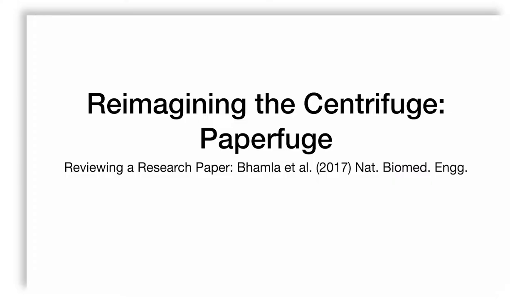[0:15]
So we've spoken about centrifugation so far, in terms of centrifuges that we can find in a research lab. But what if we know the principles of centrifugation and we want to think, how can we make one from scratch? And can we make one that is cheap and yet does our job?
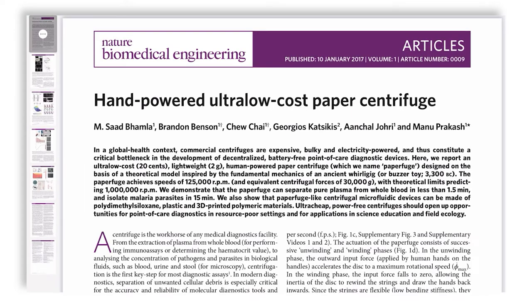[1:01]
Now, sometimes this is a contradiction, right? If you make it very cheap, then it doesn't have the features that the complex one has. And this is the theme that Saad Bhamla and company attempted to address in their paper in Nature Biomedical Engineering. This paper is titled Hand-Powered Ultra-Low Cost Paper Centrifuge, and we are going to review it. We're going to discuss it in the context of the limitations and advantages of such an approach.
They claim that their paperfuge, or hand-powered paper centrifuge, because the key part, the rotating rotor, is made of paper, can achieve 1.25 lakh RPM, approximately 30,000 G, and an upper limit of 1 million or 10 lakh RPM is maximally achievable according to them. They in fact managed to separate plasma in 1.5 minutes. Let's see the evidence.
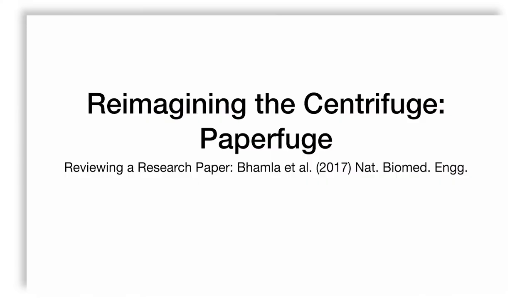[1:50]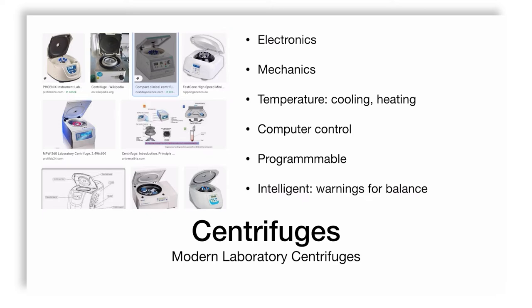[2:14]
So conventional laboratory centrifuges have complex electronics. They usually have an electric motor that drives the mechanics: rotors, spindle, ball bearings, lots of engineering goes into it. They're also at times capable of having thermal components with either cooling or heating or both, because sometimes your sample is thermolabile or thermostable only at a certain specific temperature. And being able to control this is important, which is why a good research lab has a good centrifuge, at least one. Modern centrifuges are also computer controlled with programmable interfaces.
They may even be intelligent. They will give you a warning. They will alert you when things go wrong, like, for example, tubes are not balanced and so on and so forth. But all these things are not always available. And many of you may be in colleges that are watching this, and maybe you know that these kinds of centrifuges are not available in your college. And it's a bit of a pity, but that's how it is.
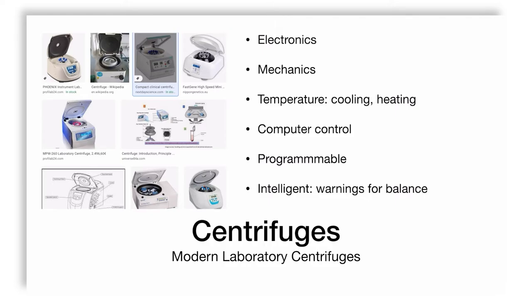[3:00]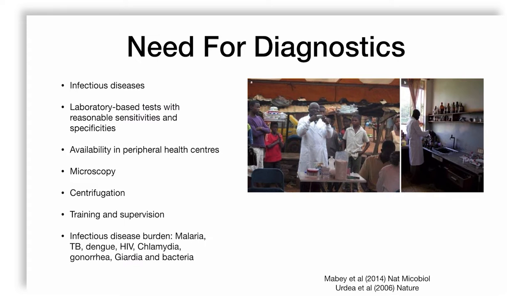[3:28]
But when we go to medical diagnostics, it turns out that for infectious diseases, to run laboratory-based tests of reasonable sensitivity and specificity, we need microscopy and centrifugation. Now, not all these devices are available in peripheral health centers, in remote areas. Even in India, you can see that there is a big difference between urban and rural, and even within urban areas, there will be parts of the city which do not have very good facilities for health and parts that do. So to tackle this difference, we need both equipment and training, as well as supervision. Because the disease burden of malaria, TB, dengue, HIV, chlamydia, gonorrhea, giardia, and bacterial infections is so high in countries like ours, that something needs to be done.
And this is reviewed by Mabey et al. in Nature Microbiology and Urdea et al. in Nature. The paradox is that these devices are commercial. You can buy them. But that means the primary healthcare center needs money to buy them, which means they need a budget, which means they need somebody to pay for it. Now, not everyone has the money. Not every country has the budget for it. Not every country has the plan to put diagnostic centers everywhere. This is a tragedy for humanity.
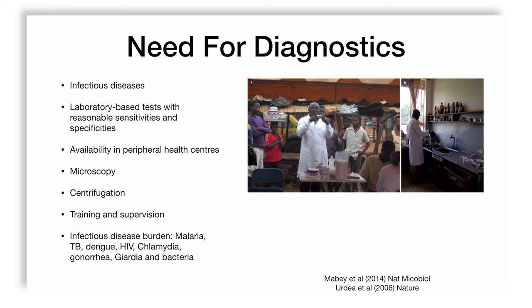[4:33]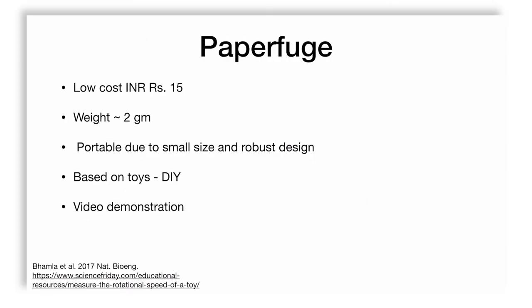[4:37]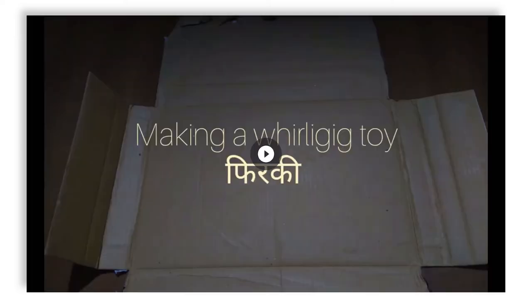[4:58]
And scientists like Bhamla et al. decided to make a low-cost centrifuge costing only rupees 15 in terms of parts, weighing only 2 grams, and made in such a way that it is portable and robust. They in fact used it as a platform based on a toy, a do-it-yourself toy. So the video demonstration I'm going to show you is about exactly this toy.
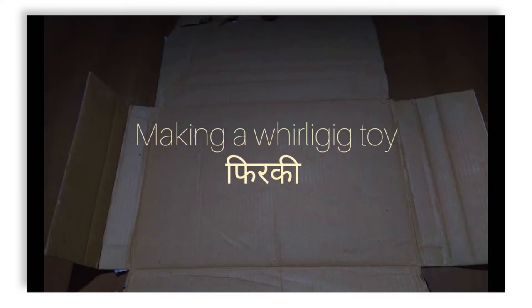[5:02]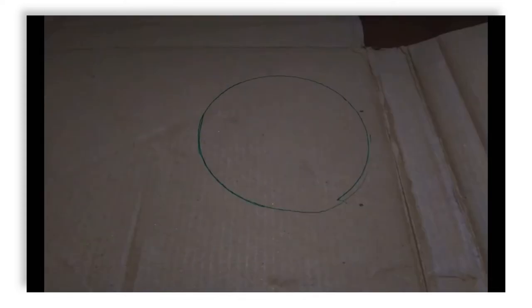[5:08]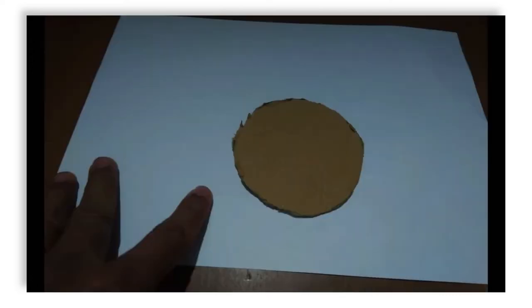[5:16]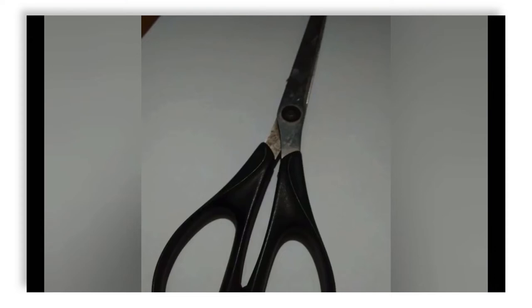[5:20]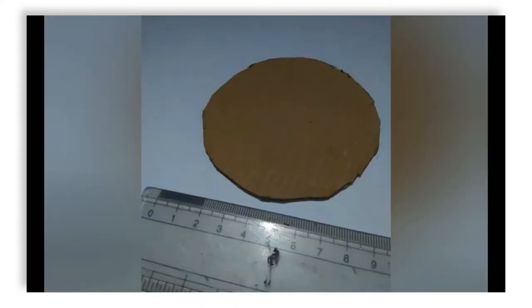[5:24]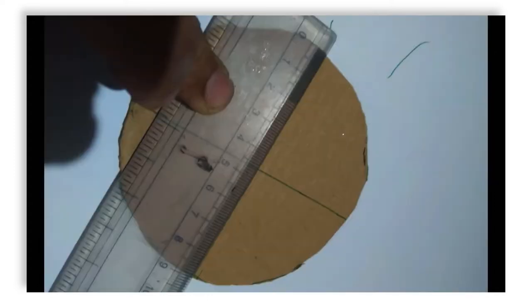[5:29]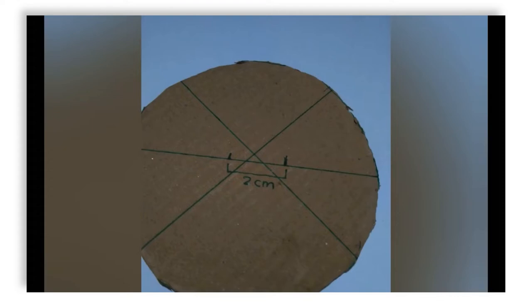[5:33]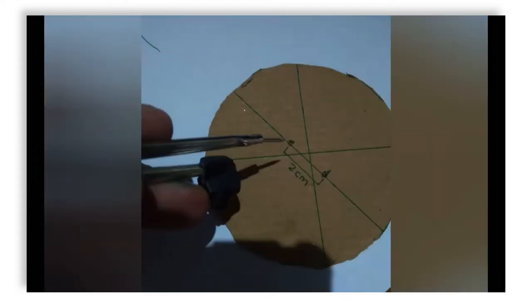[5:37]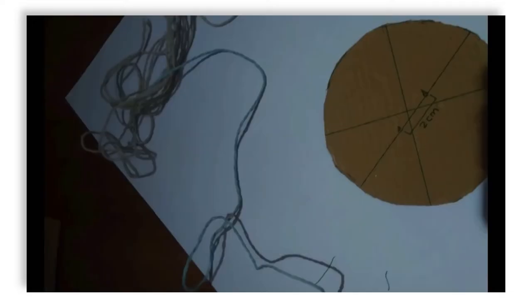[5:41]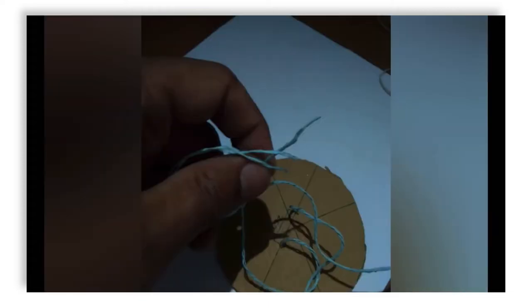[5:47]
I took a cardboard piece, so I tried to mimic what they did. Took scissors, thread, pen, and something circular. I marked a circular pattern on the cardboard piece, cut it, smoothed the edges of the cut with a scissor. And then with a scale or a ruler, I made lines along the diameter so as to find the approximate center. Once I had the center, initially I got some wrong centers. I marked two holes separated by 2 centimeters using a compass and inserted thread through it. That was my basic toy. And I tied it up. Now I have my basic toy.
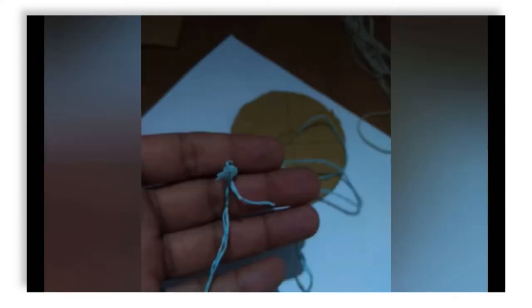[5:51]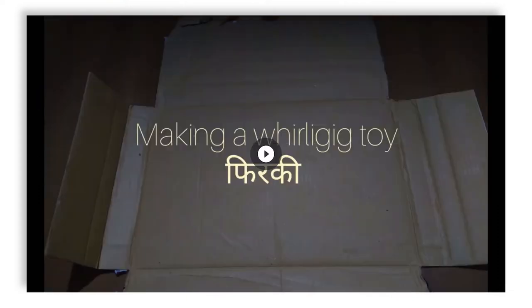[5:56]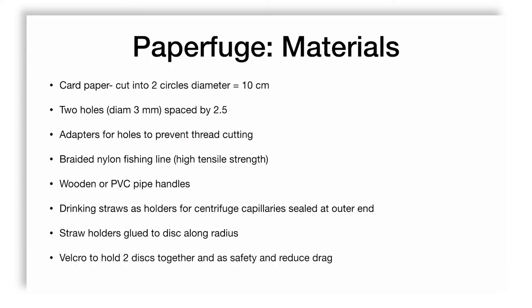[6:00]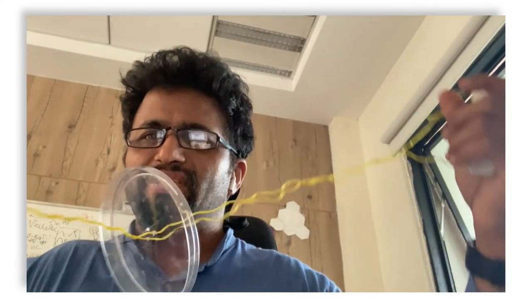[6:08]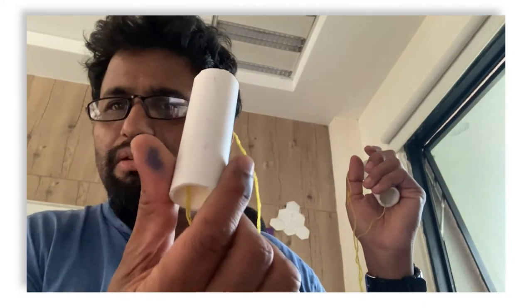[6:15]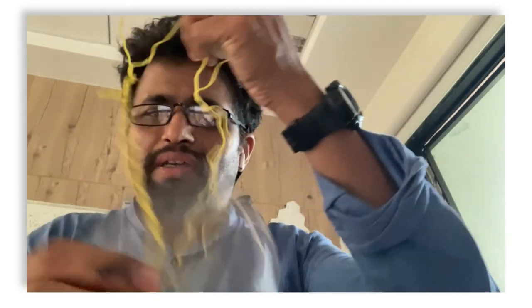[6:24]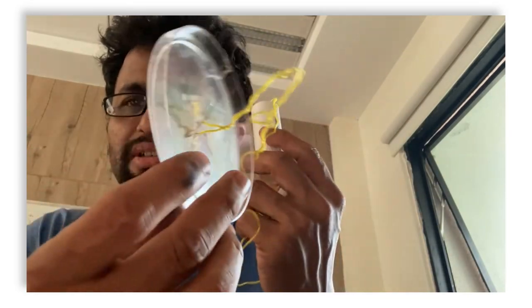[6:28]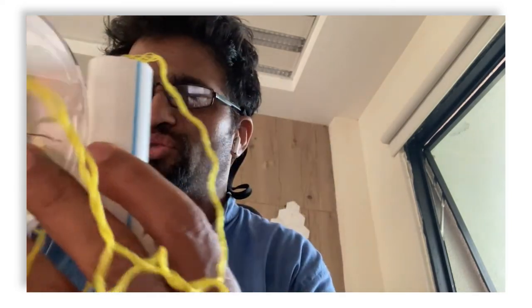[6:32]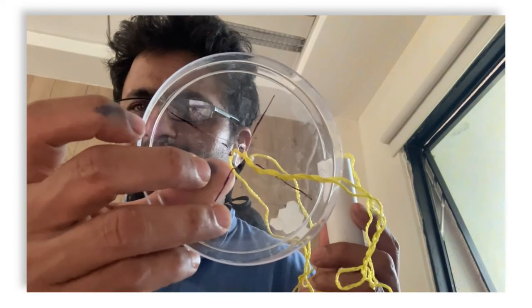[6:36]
But this basic toy can be made a bit more sophisticated, as the people in the paper have described. And I've made a version of it, which you can see now. So this is a small mimic of the paperfuge that we have made, with the handles made out of PVC pipe, nylon thread, fishing thread. And you see it in focus now. And a disc that is made out of a cap of a petri dish, 80mm petri dish. And we have marked the two centers as we had described in the description earlier.
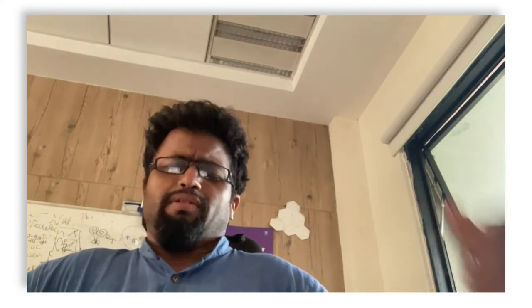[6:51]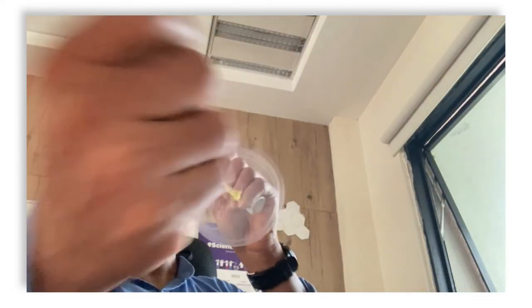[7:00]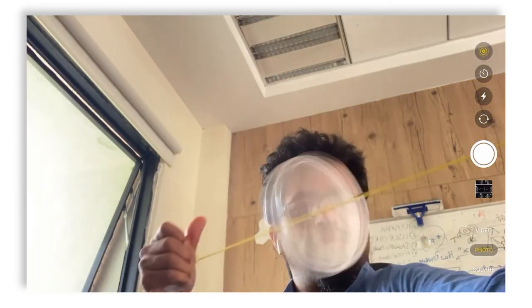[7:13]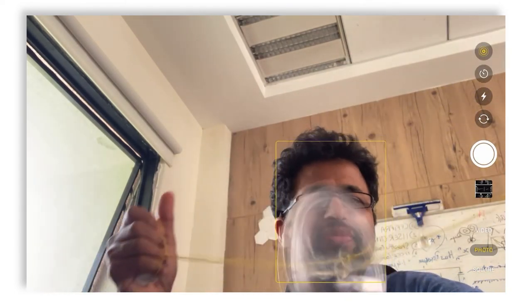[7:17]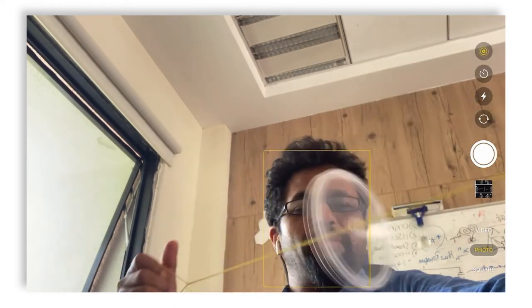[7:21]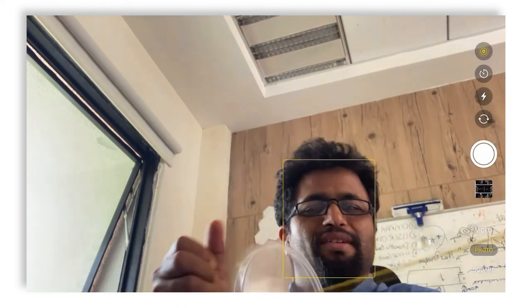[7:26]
And you will notice that this is surprisingly capable of working quite well. So you need a little bit of practice. You need to torque it. And you will find that this expansion and contraction motion gives you quite high RPMs. And I don't know if you can hear it, but this is really fast. According to the calculations in the paper, they can at times even reach 10,000 RPM. And that's astounding. Now, all this motion, what is it for? Let's see.
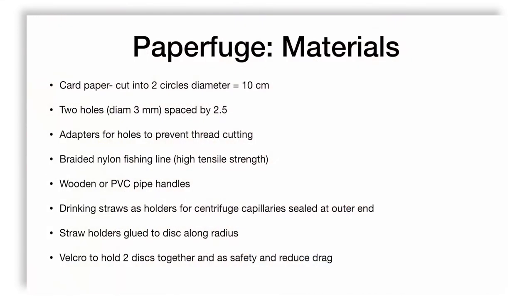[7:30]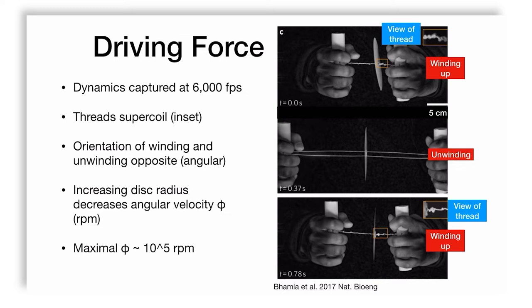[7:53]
So as it turns out, when they used a high-speed camera, what I have here is a normal 40 frames per second camera. They used 6,000 frames per second camera. And they could see what you saw already, maybe by eye, that the thread can supercoil. And the orientation of winding and unwinding is opposite, meaning to say that when it's winding up, the rotation goes one direction, clockwise, you say, and when you unwind it, it goes in the opposite direction. The force that is exerted is usually to unwind, because as you noticed, that my device compresses when I am trying to let the supercoiling take over.
This is the part which they refer in the paper to as winding up. And the pulling apart is called unwinding, which leads to rotation in the other direction. That momentum, or you may say inertia, results in it over torquing and going in the other direction, leading to again supercoiling, and the cycle goes on.
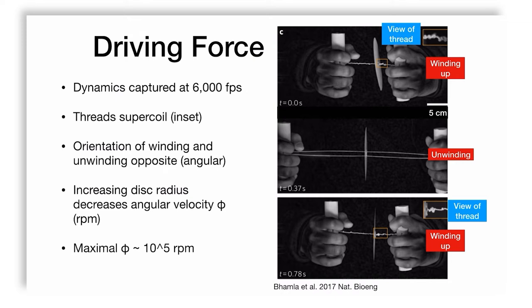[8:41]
They also found that the disc radius, if it's very small, the angular velocity is very high, and as the disc radius increases, you get lower angular velocity. Now, think about this for a second, that if you are trying to centrifuge a tube, let's say a Eppendorf tube, or these microcentrifuge tubes, then you want at least a minimum disc radius. Because if you don't have it, then you are unlikely to be able to make any use of it. Correct? But on the other hand, you also want it to go fast for the applications you're looking for. So the maximal RPM that they could observe was 1 lakh RPM. That's a lot. That's a lot, by the way. And if you have access to a laboratory, or when you go back to your laboratories in school or college, you can take a look at this.
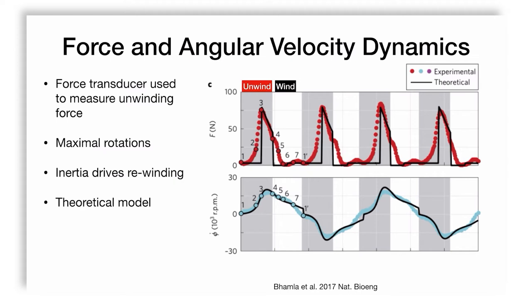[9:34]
In their paper, they demonstrated using a force transduction device that the pulling force, the unwinding force, is in the range of about 75 newtons. The part where there is a drop in the force is also a part corresponding to the winding phase. That winding phase leads to slightly slower rotations and a switch to the other direction. This is what I was referring to. So what you're looking at in the two graphs, upper and lower, are force and the corresponding RPM for the same time series.
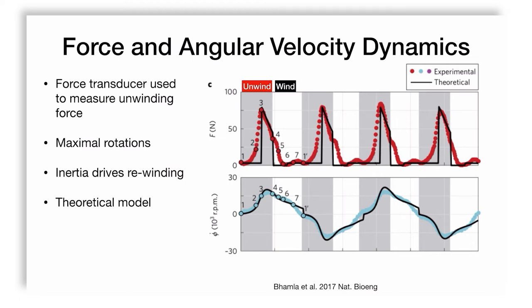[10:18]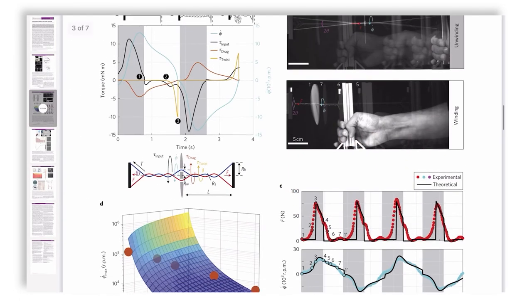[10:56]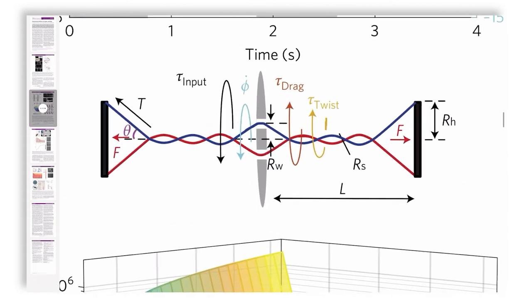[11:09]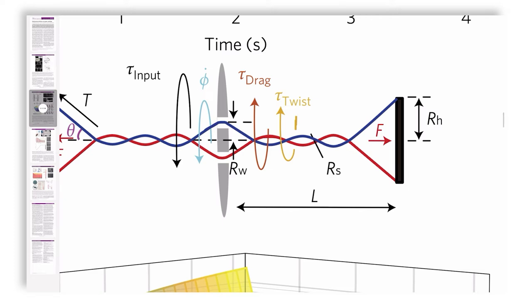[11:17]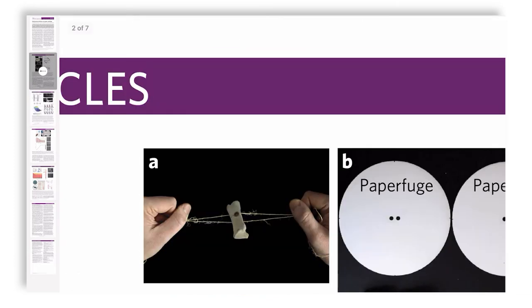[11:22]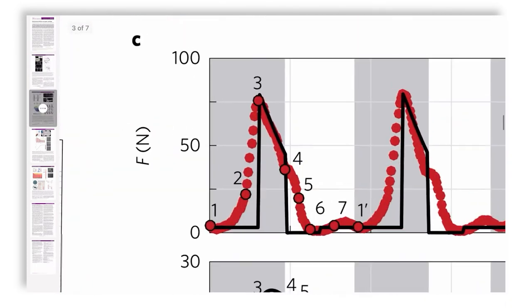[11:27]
The interesting part of this is that they also developed a theoretical model of the physics of torque, of the thread, of the viscous drag that the centrifuge experiences as it moves through this fluid of air. And finally, the motion itself, which is driven by the behavior of the user. So if we look at their paper, they are describing T input, that is the behavior of the user, the twist due to the thread, and T drag, tau drag. These are the three torques that they are interested in. The radius of winding, radius of the hands, and the theta angle formed by the hand, the thread, and the hands are considered to be important. So twist, drag, and input.
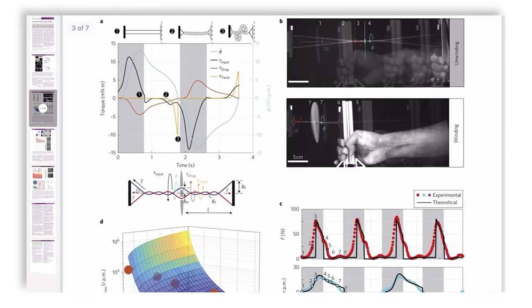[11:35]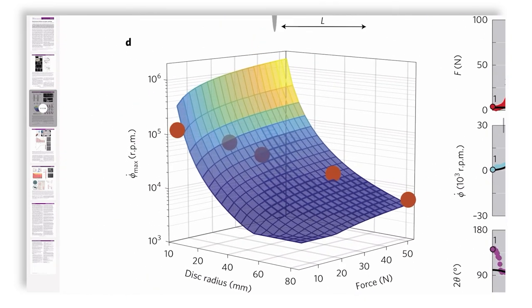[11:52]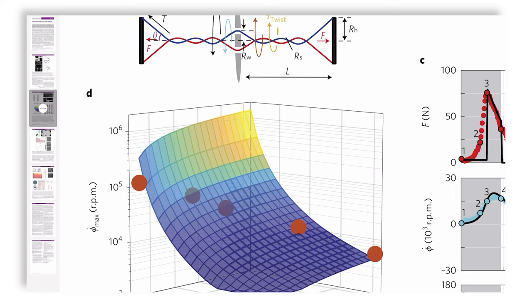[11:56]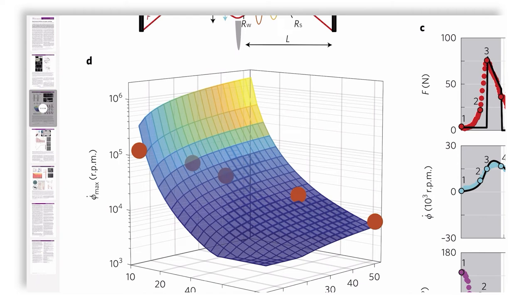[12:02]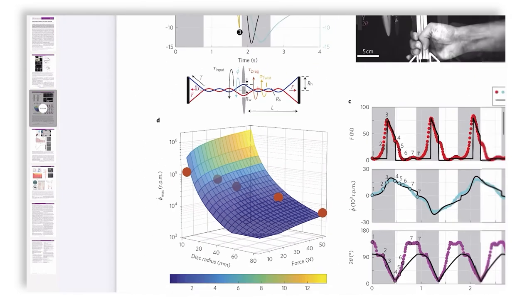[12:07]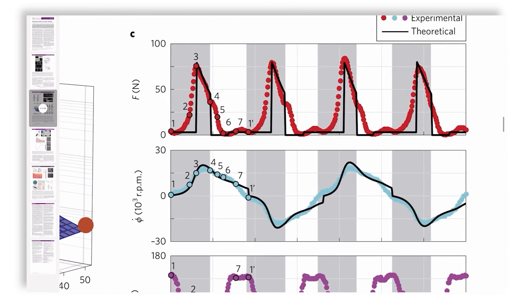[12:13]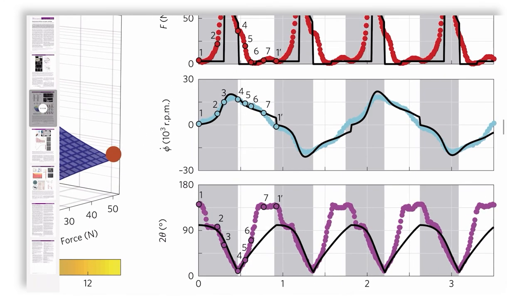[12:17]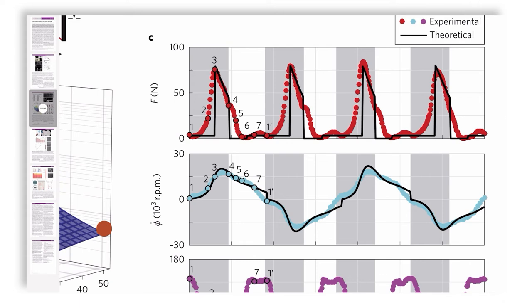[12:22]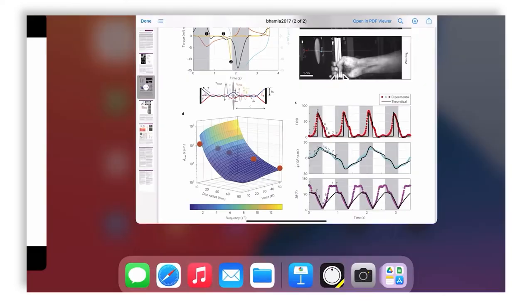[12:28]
Now, what they also do is they test whether the experimental data of rotation, disk radius, and force match with each other. And as you can see in this surface graph, they appear to indeed match. As with a lot of theory, you can calculate a lot theoretically once you have the equations, but experiments are harder to do. But in this sort of empirical approach, it's very important to know if theory and experiment match. That is also the case in the force, angular rotations, and 2 theta degree measures, where they all qualitatively follow the same behavior as the experiment. The circles are the experiments, the black lines are the theory.
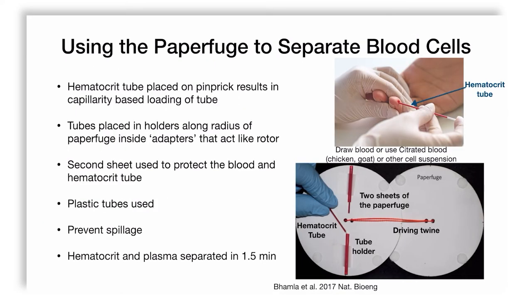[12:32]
So what did they use it for? I said this earlier, that it depends on the application. In their case, they followed the hematocrit. Now, you remember I have spoken quite a bit about hematology and very basic, very simple, elementary medical tests that are conducted when you go to do a blood test. Hematocrit is something that is
a very old-fashioned measure, because you take a hematocrit tube, pinprick the person, get a capillary bleed, place the tube in a specialized hematocrit centrifuge, and spin it and measure the percentage of the red blood cell layer to the total height of the blood column. Naturally, this process must involve heparinized or citrated blood to prevent clotting.
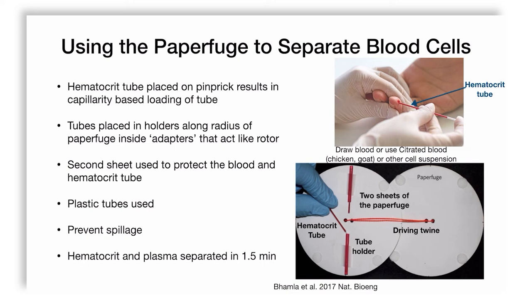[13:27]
So when you take the blood like this, it has to be already containing citrate. The amount of citrate added is constant, so that it doesn't make a difference to your calculations of hematocrit. Anyway, these are relative measures, so relative to the total volume is all you're interested in. But you can imagine that if you put too much citrate, you will change numbers.
The tubes are placed in the holders along the radius of the paperfuge, and the adapters are straws, like sucking straws. A second sheet, remember we said that the published report talks about 2 paper sheets, is used to protect the blood and the hematocrit tube. They use plastic tubes to prevent breakage and damage and injury to the user, and they use the straws to prevent spillage. All of them are sealed at one end using acrylic adhesive.
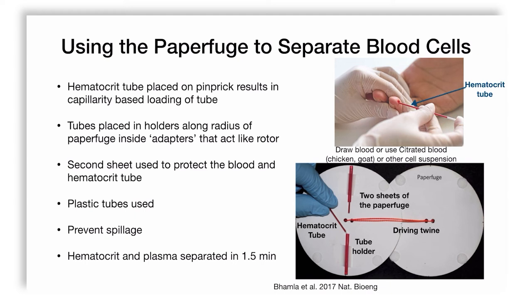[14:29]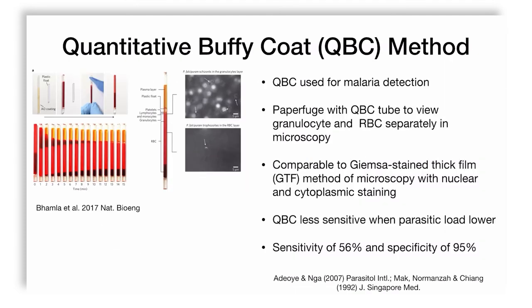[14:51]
What they found is that hematocrit and plasma separated in 1.5 minutes. That is amazing, because typically in experimental work, this takes about 2 minutes. So it is very comparable. Now, of course, they optimize the conditions, and this is important in any kind of experimental approach to find the best situation that works. And they also went ahead to use a demonstration to check whether the buffy coat can be obtained from this paper centrifuge for diagnosing malaria.
And they did this using a QBC quantitative buffy coat tube, which is already pre-coated on the inside with acridine orange. Acridine orange is a DNA staining dye, AO as it is referred to here. The citrated blood is introduced into the tube. A little plastic floater is added into it that spreads the buffy layer, therefore giving you bigger resolution, because otherwise the buffy layer is very small. Buffy layer usually includes white blood cells. Buffy coat.
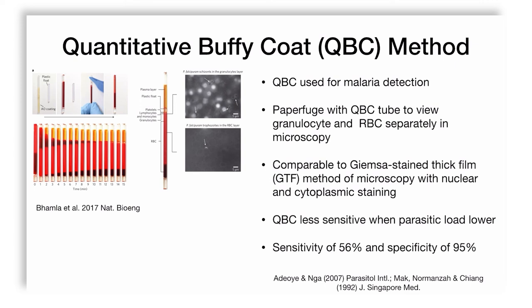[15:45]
And the cells are centrifuged using the paperfuge. Initially, as you see over here in the left corner, the float drops down because of centrifugation, but then because of density, it reaches an equilibrium position and spreads the buffy coat. The bright red color is RBC, as you expect. The platelets, lymphocytes, monocytes and granulocytes are spread in the upper thin layer, and the plasma layer is on top of it. The float is the one that separates the plasma and the buffy coat.
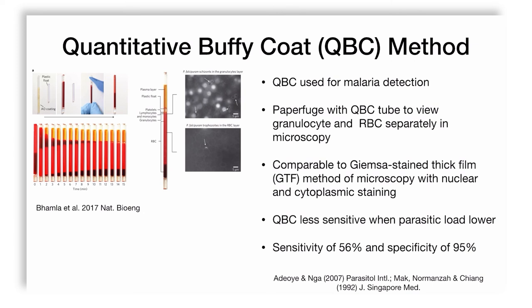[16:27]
In comparative studies between the quantitative buffy coat method and the Giemsa-stained thick film, that is the GTF method, it was found that QBC is much less sensitive, meaning to say the lowest number of parasites that can be detected using QBC is only 56% compared to the gold standard, which is Giemsa thick stain. The specificity, on the other hand, meaning if there is something, you will find it and you can distinguish it from other parasites, let's say malaria from dengue, is 95%. This is based on studies by Adeoye and Nga in Parasitology International and Mak, Normanzah and Chiang in 1992 from Journal of Singapore Medicine.
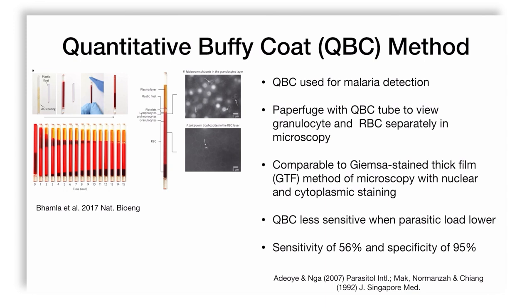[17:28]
So in summary, we can say that the paperfuge is a wonderful do-it-yourself laboratory centrifuge for low-cost separation. It has very specific advantages that relate to the applications that it was used for, making it a possible additional tool for diagnostics, especially in low-resource settings, meaning when there's less funding available for basic clinical diagnostics. But it's also limited in terms of the application because it has not been demonstrated on others.
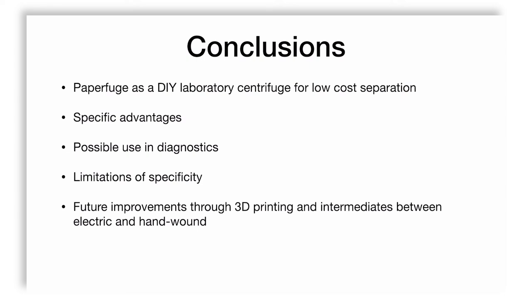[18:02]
So if you would like to try this, this is something that you can easily do in a small school or college laboratory. And future improvements are definitely possible through 3D printing and intermediates between electric and hand-wound machines. So we stop here and we'll continue on some problems.